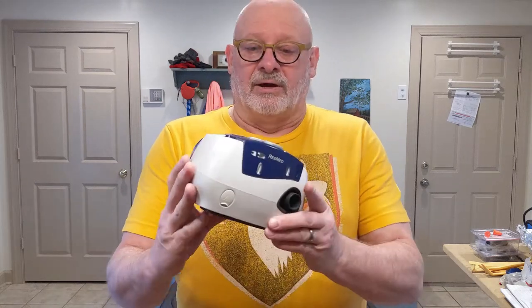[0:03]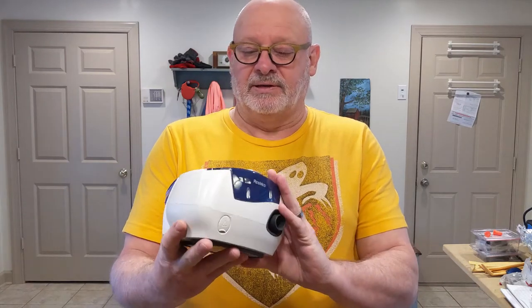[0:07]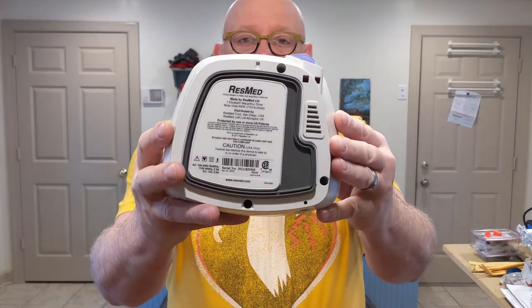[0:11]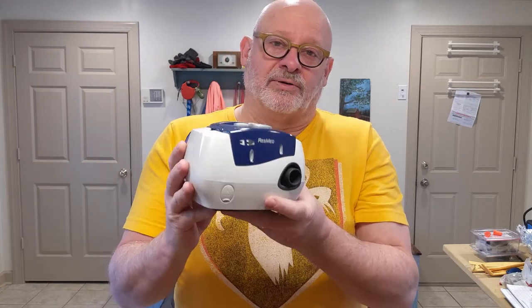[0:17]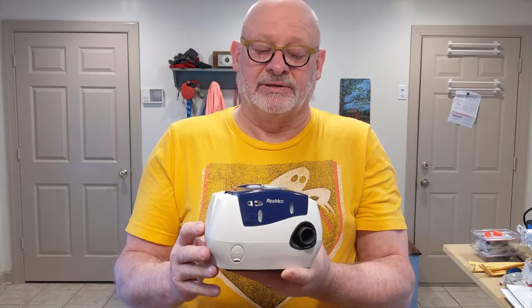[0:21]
Hey, today I'm working on a RESMED CPAP machine. This one is the RESMED ESCAPE 2. And it has a little problem where the power button no longer is responsive. I'm going to go into this thing, and I think I know what's wrong with it. I'm going to show you what I'm going to do to fix it.
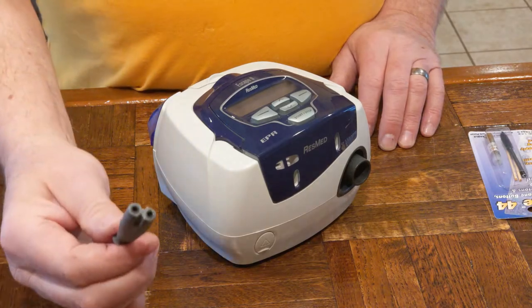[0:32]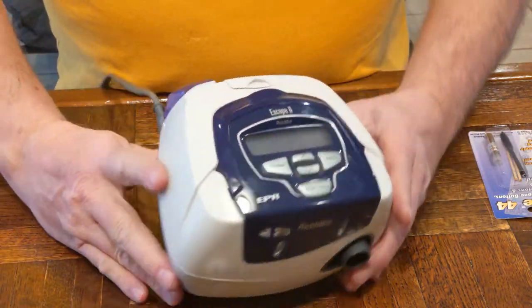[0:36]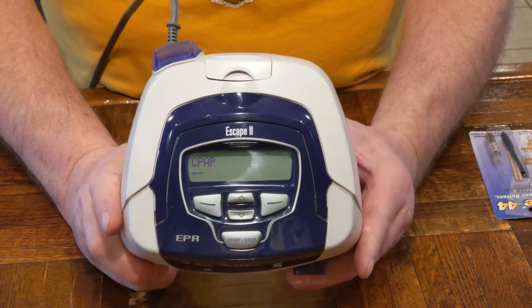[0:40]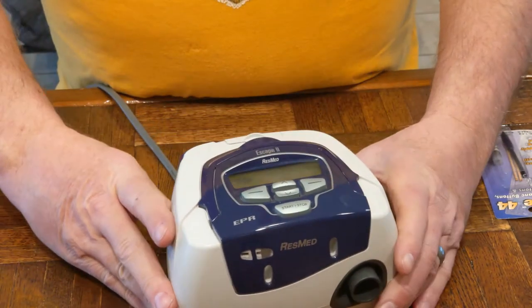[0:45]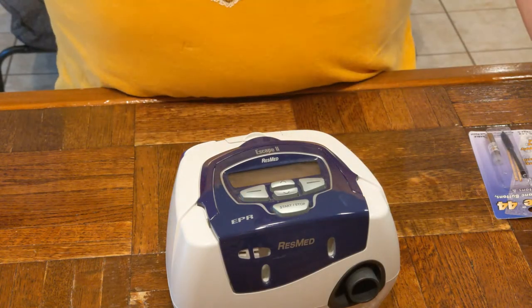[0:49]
It uses membrane switches, and they become contaminated. So on this machine, you can see it's unplugged now. If I plug it in, you'll see it come up and start working in a minute. And it has a whistle I'd like to take care of at some point as well.
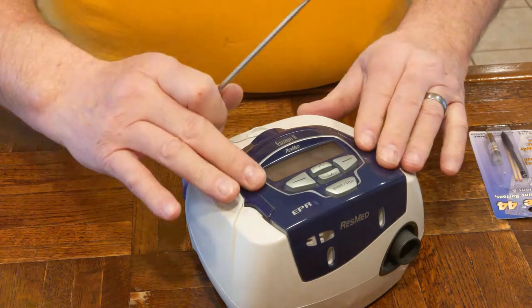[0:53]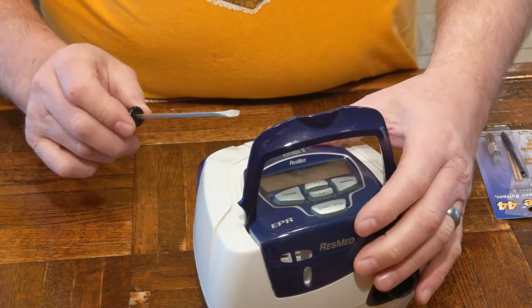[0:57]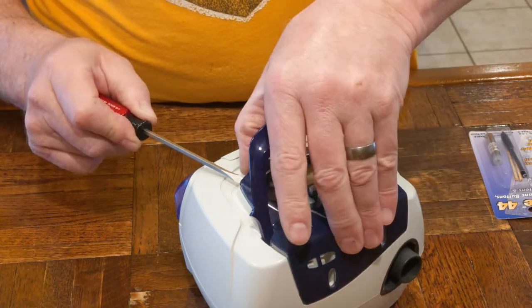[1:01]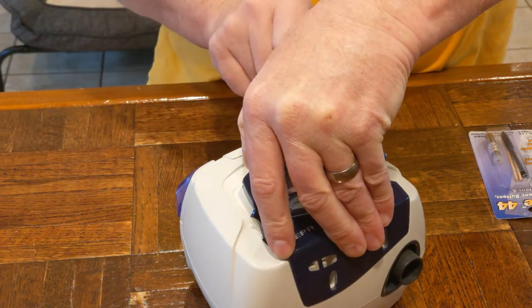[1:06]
So these are the switches here. They're membrane switches. And you basically lift this cover, this little handle here, and this cover just snaps on with the magic of some plastic clips.
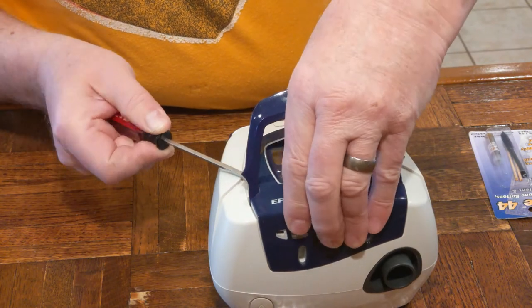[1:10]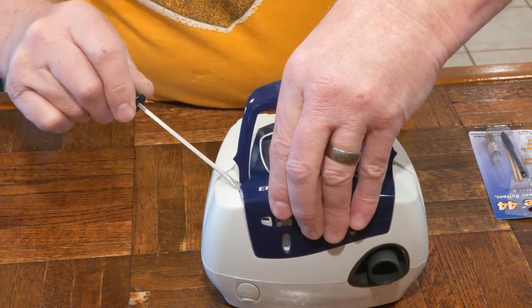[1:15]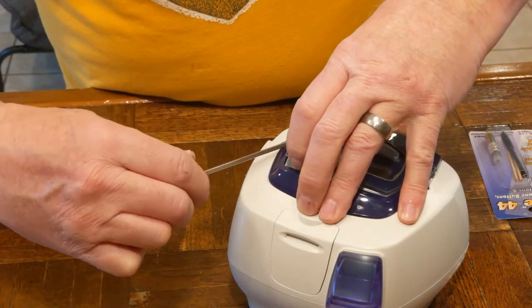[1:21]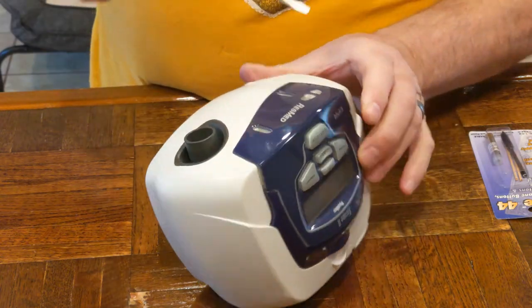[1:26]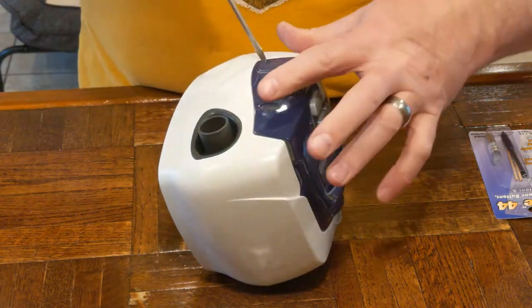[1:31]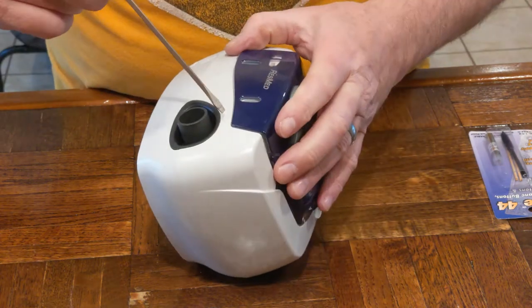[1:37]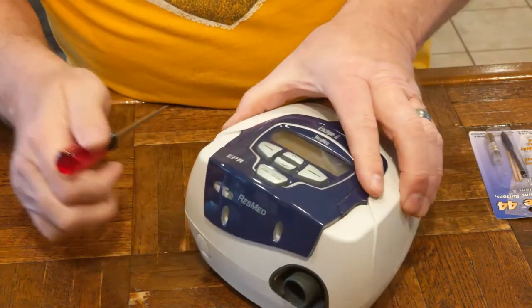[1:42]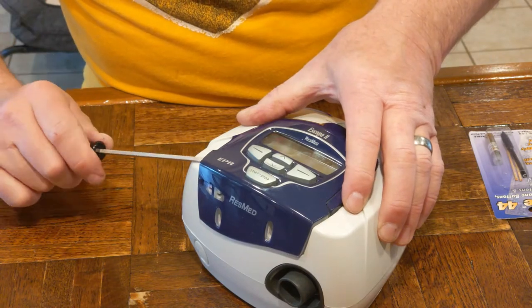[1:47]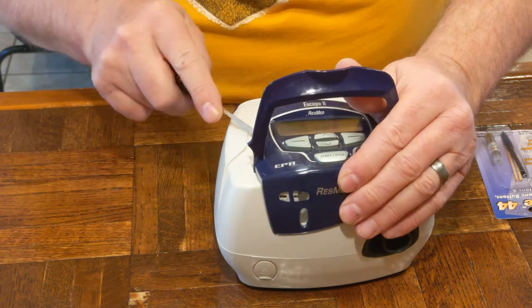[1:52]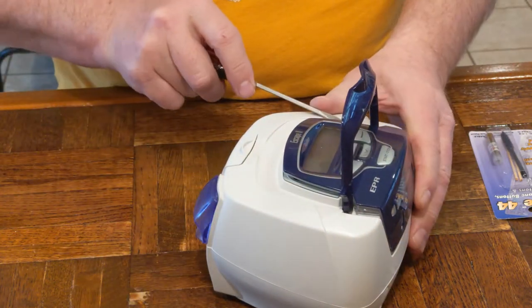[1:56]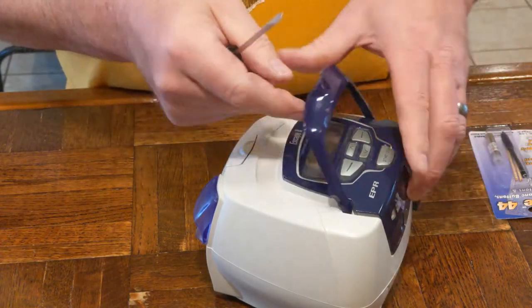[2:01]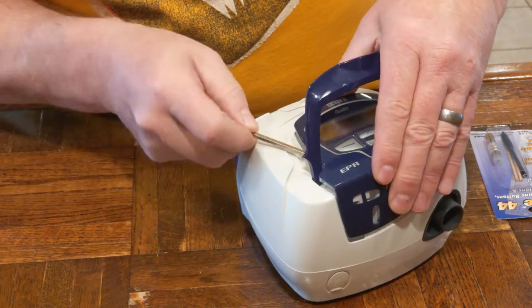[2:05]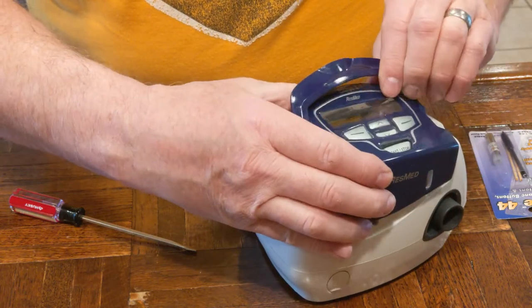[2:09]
I was afraid this thing's gonna break. Plastic clips, yeah. Sounds like it's breaking, but I think she's kind of not for the faint of heart, I guess. There we go.
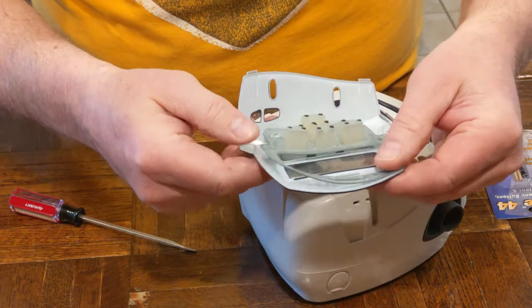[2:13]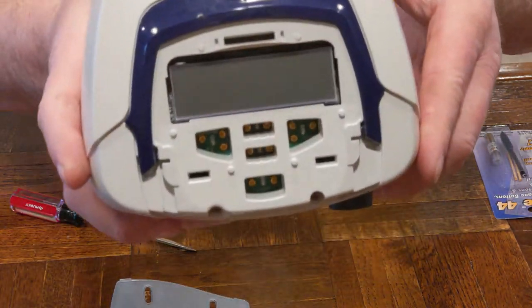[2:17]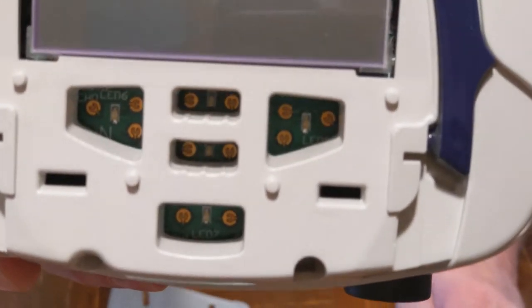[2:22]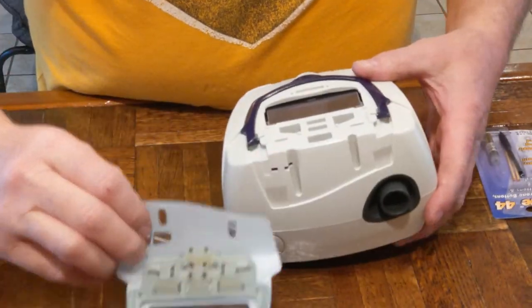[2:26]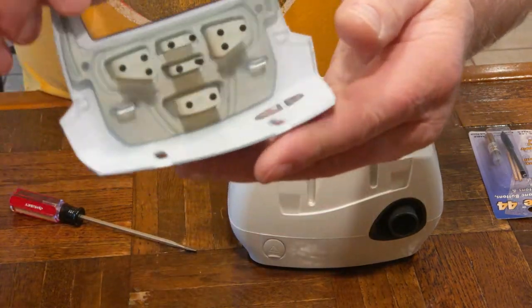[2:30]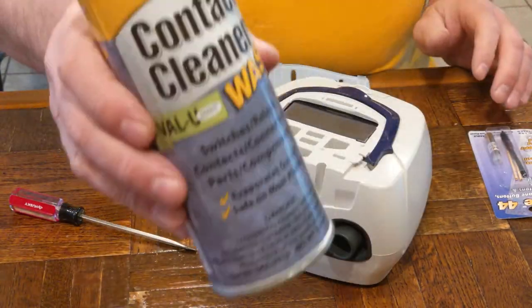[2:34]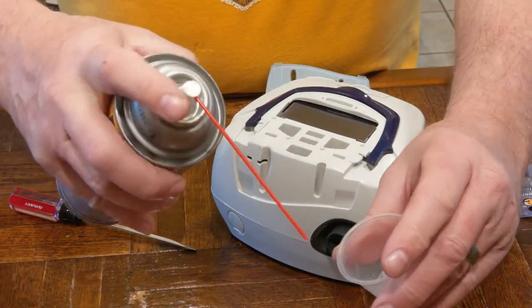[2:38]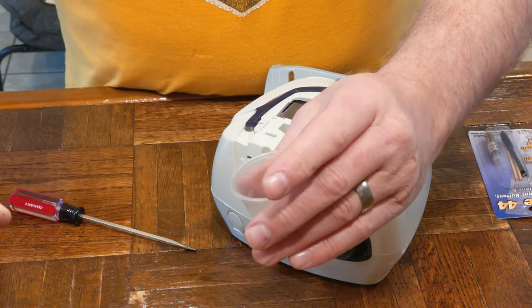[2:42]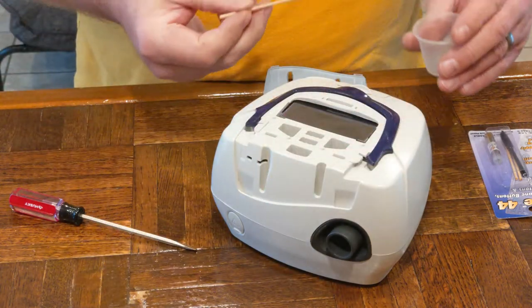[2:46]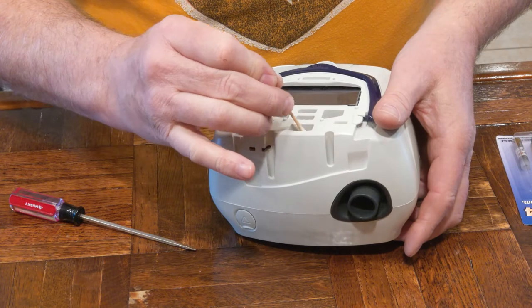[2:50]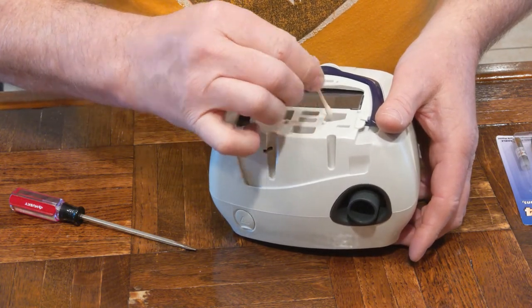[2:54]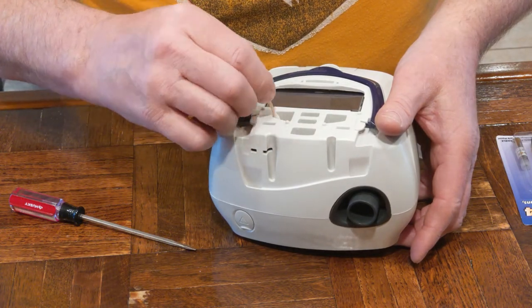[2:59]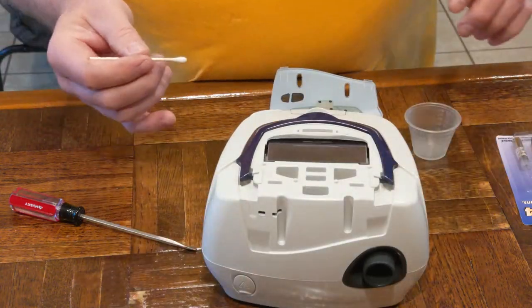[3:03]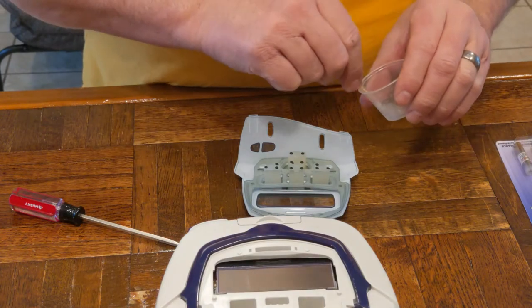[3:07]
So you can see down inside of the connections, little contacts that are bridged with the membrane switches here. So I've got a little contact cleaner. I'm not going to spray it on the equipment, but I'm going to spray it into a little cup here. And then use a cotton swab to clean these contact points. And also to clean the switch contacts.
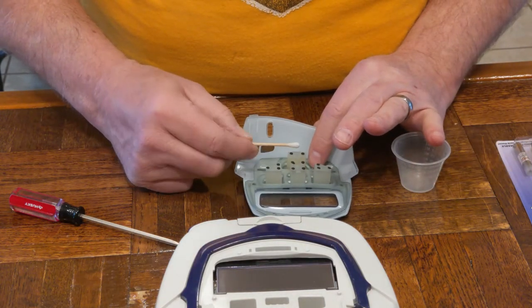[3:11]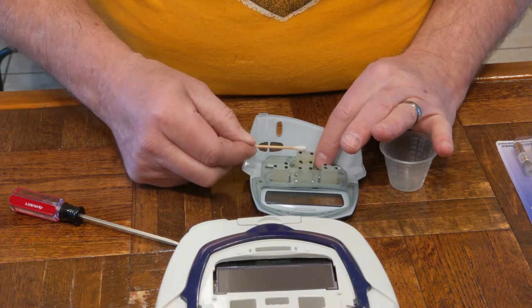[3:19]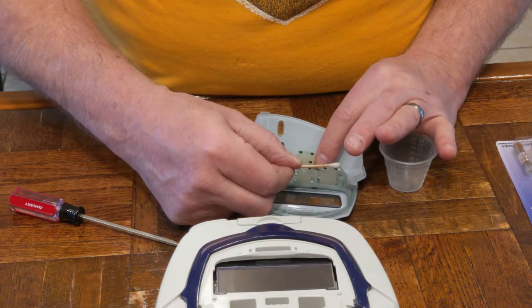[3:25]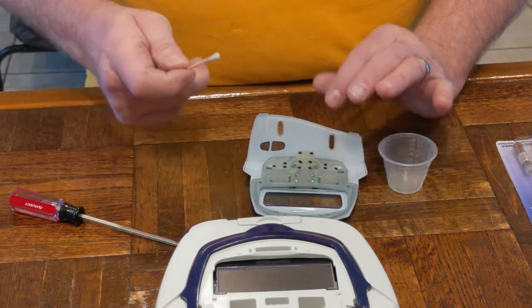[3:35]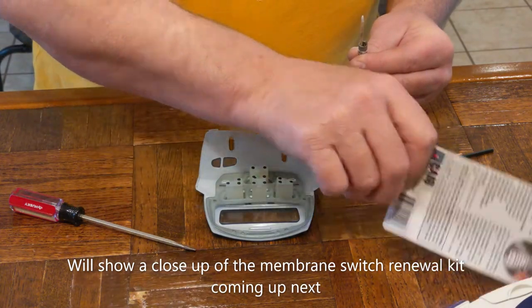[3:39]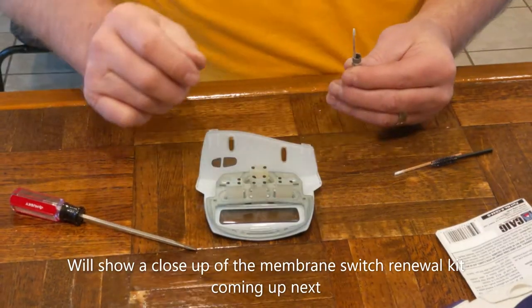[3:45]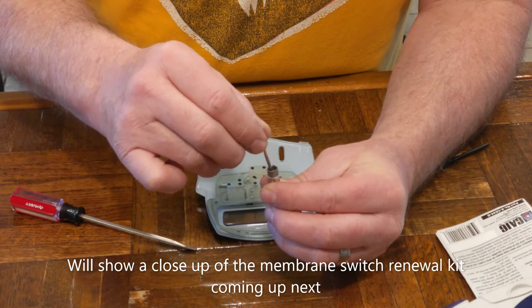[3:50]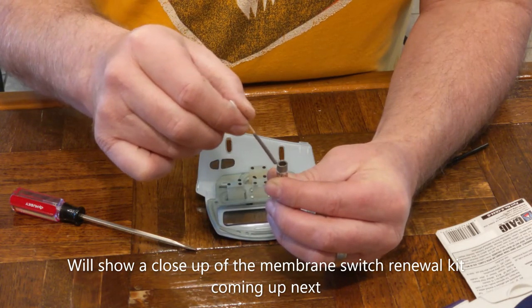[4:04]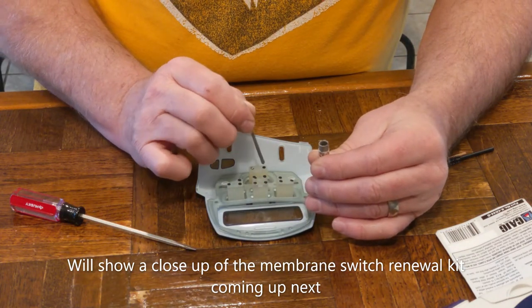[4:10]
So I've cleaned the contacts. Now I'm going to apply this restoration kit here. I've opened the bottle of this conductive adhesive here, and I'm agitating it, stirring it up a little bit. I can tell it has settled to the bottom. And I'm just going to lightly paint it on the contacts here. And let it dry about 20 minutes.
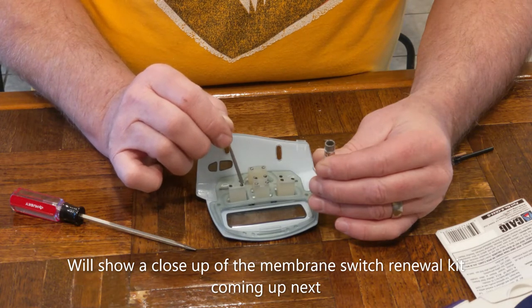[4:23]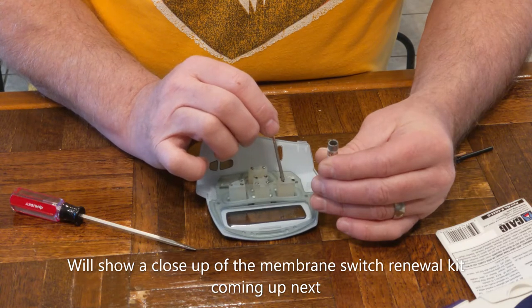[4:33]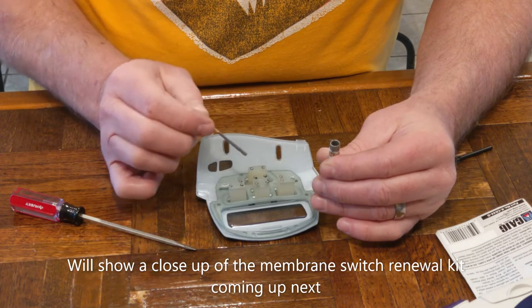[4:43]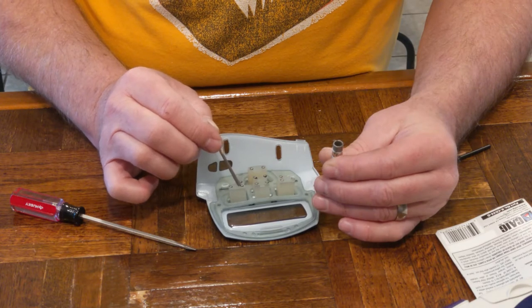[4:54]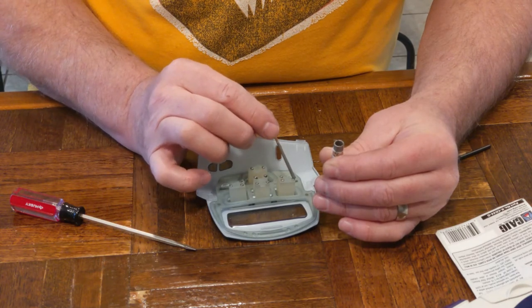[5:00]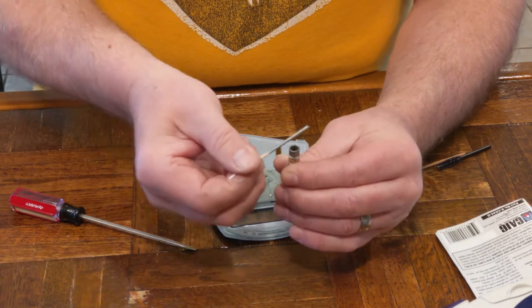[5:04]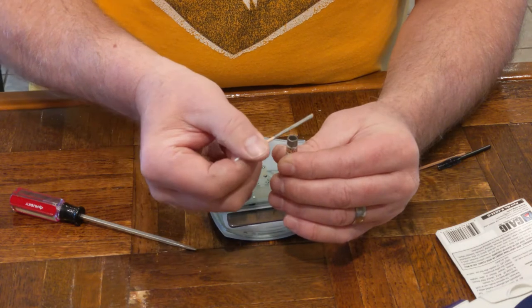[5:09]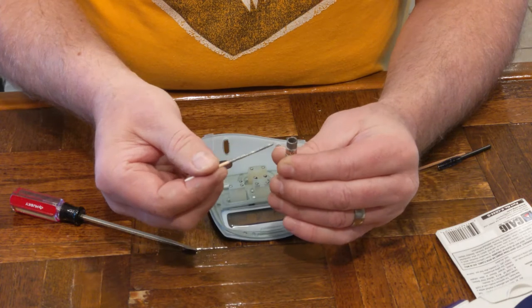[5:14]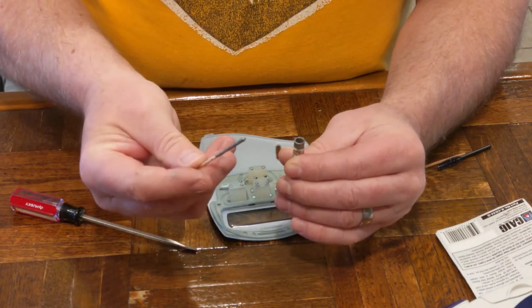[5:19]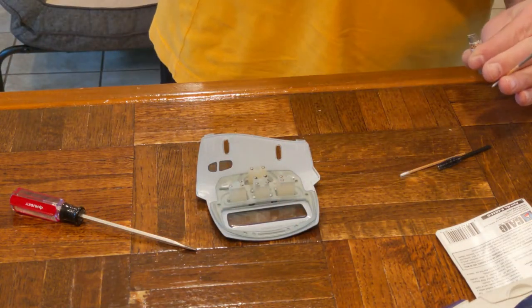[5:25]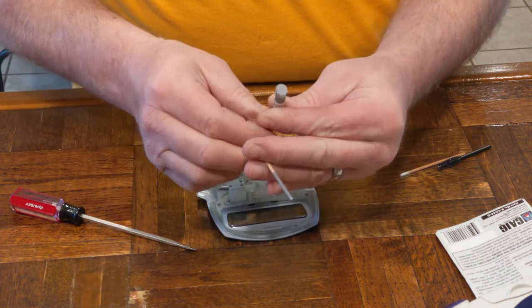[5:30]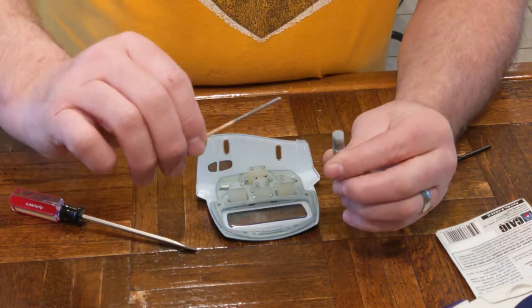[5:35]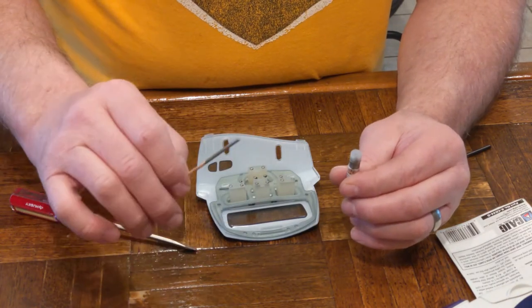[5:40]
Try to save this. I'll run this back into the jar here. And now that I have it on a stick here, I'm going to use a stick to let me know when it's dry. And then I can put the cap back here. So when the material on the stick dries, then I'll know that the material on my contacts have dried as well. And then I can proceed to install it.
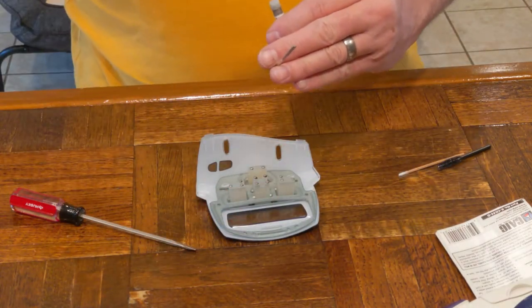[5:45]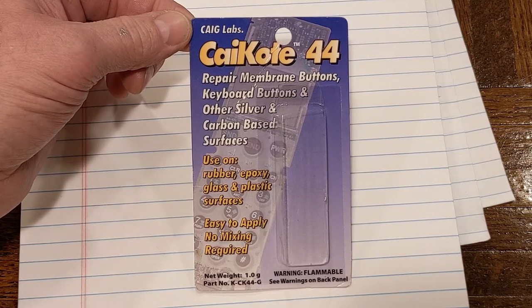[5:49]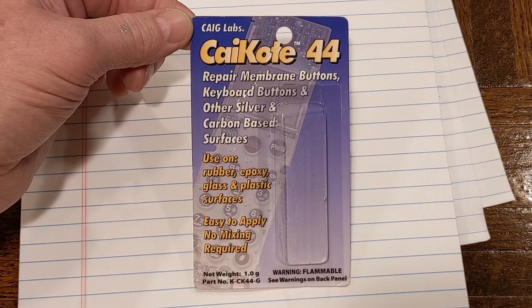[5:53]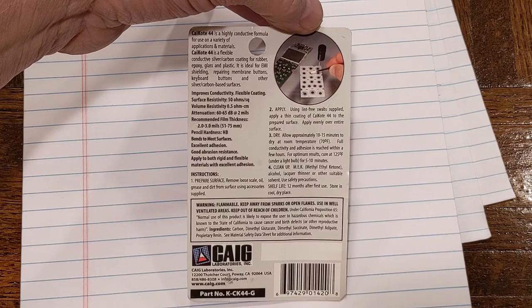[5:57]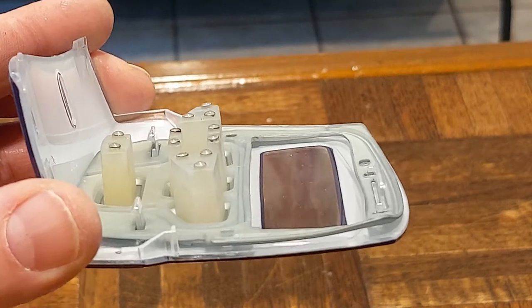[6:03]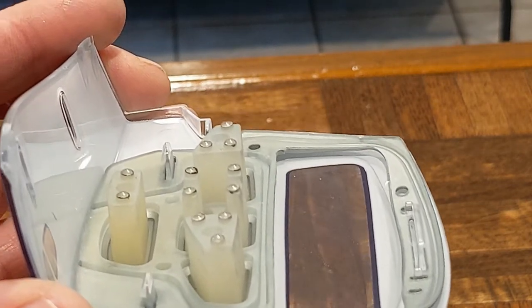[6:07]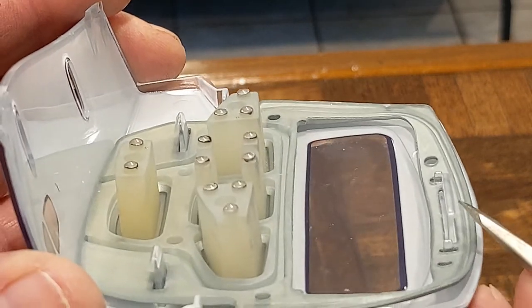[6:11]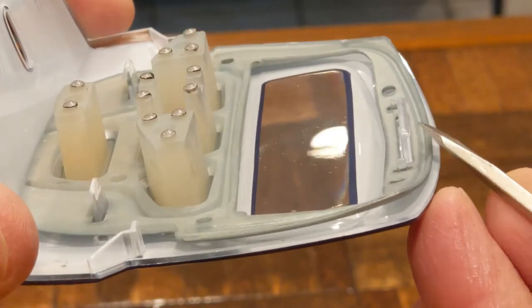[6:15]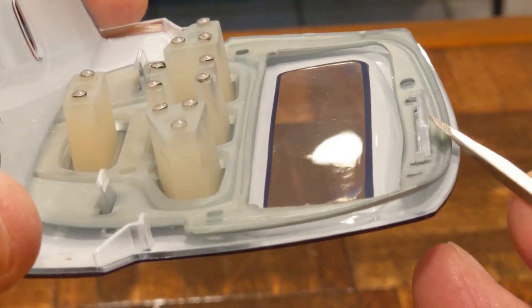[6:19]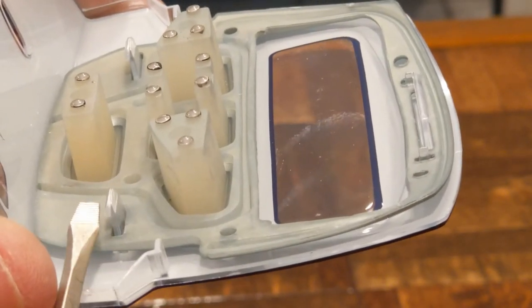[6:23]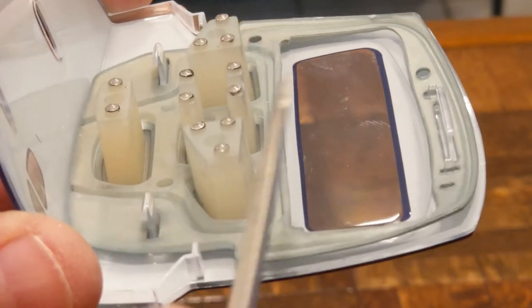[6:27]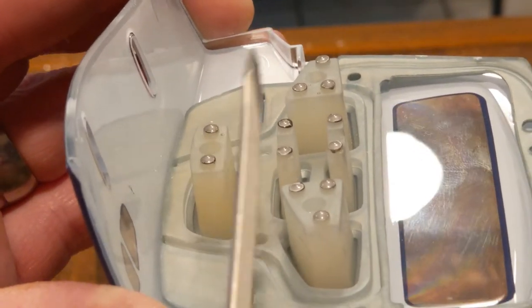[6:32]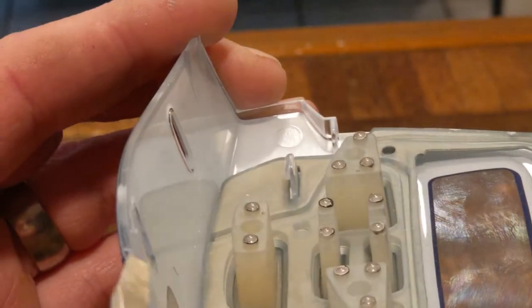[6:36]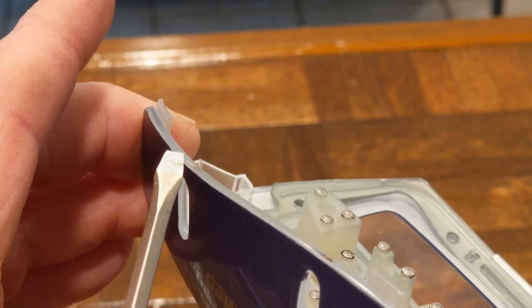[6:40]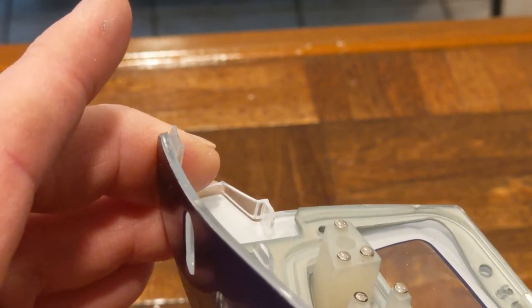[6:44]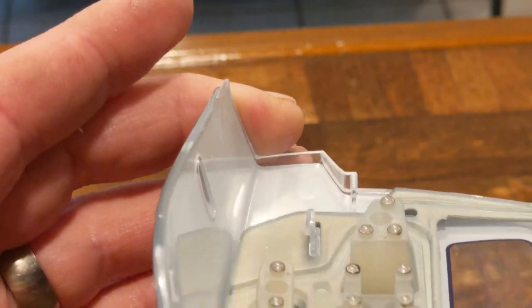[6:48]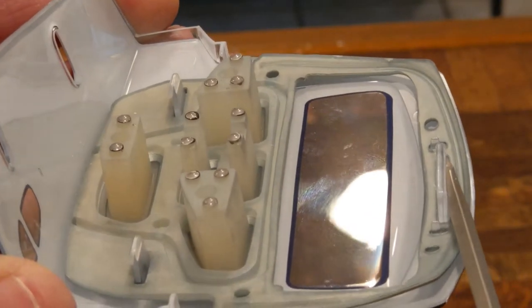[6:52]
So while the switch is drying, I want to take the opportunity to study the clip, how this panel is retained in a unit. And you can see right here there is a ledge on this side of this clip here. And there's a clip back here, and the ledge is on the opposite side here. And then again, there's another clip here. And those are the three things that hold this piece in. And there's also two tabs right here. You can see two tabs that go in and guide it into slots that keep this retained in. But really what holds it in are these three clips. One long one here, and then these two little ones here.
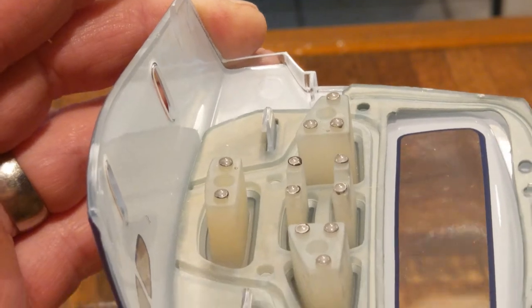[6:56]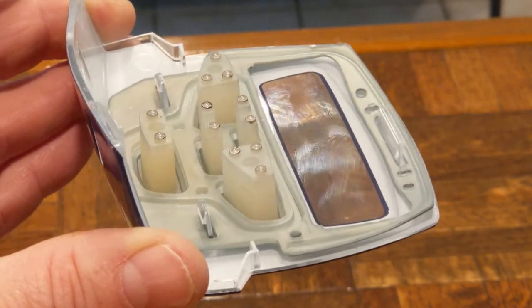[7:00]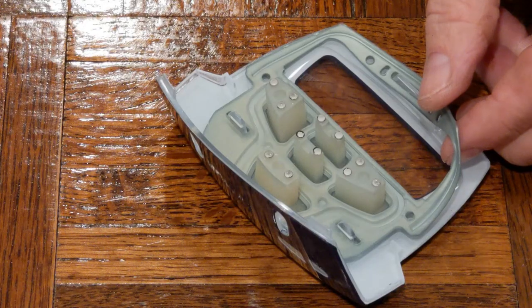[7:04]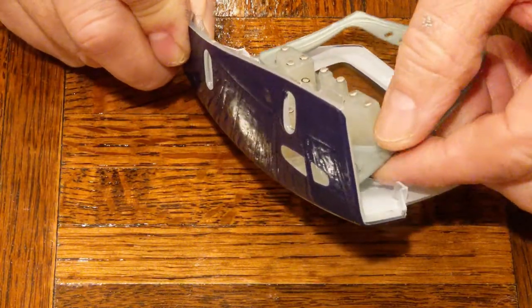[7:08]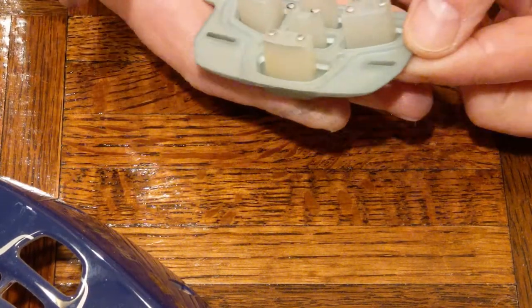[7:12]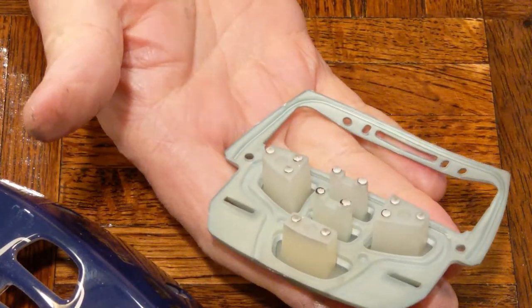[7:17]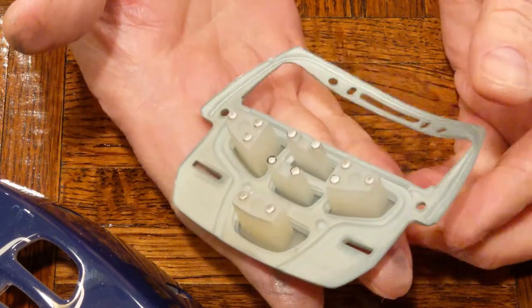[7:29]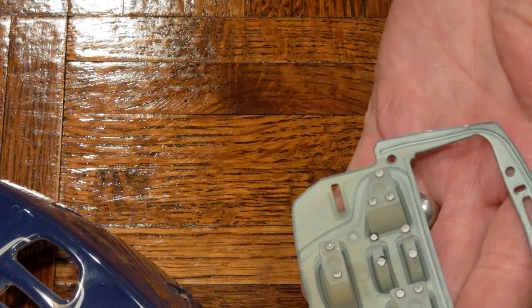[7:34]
So I'm going to remove the rubber membrane from this housing here. And I'm going to put this in the oven to encourage it to dry quicker. And according to the directions, it can dry for 10 to 15 minutes at 125 degrees Fahrenheit. It's kind of cool in here, so it's taking a long time to dry. But I'm going to encourage it to dry quickly by putting it in some heat.
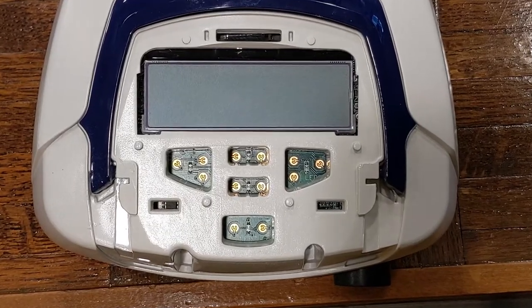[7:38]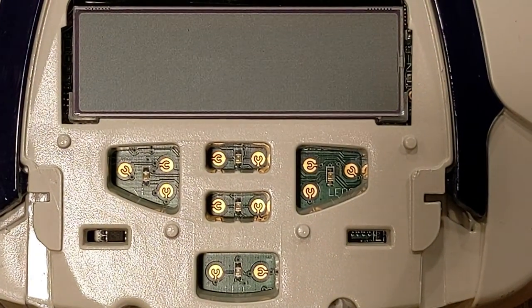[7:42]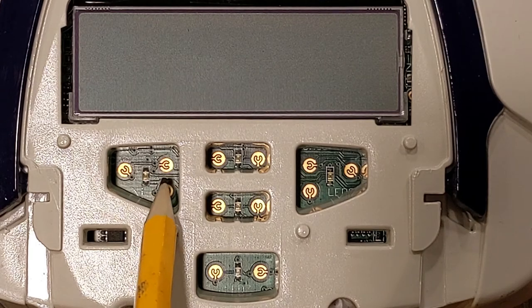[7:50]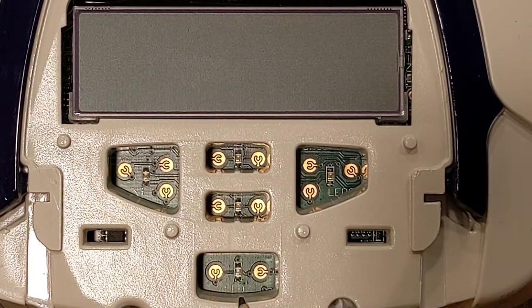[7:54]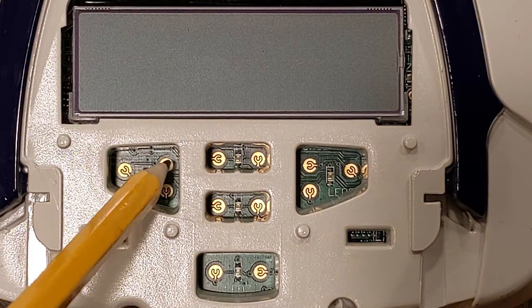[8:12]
I wanted to talk a little bit about these switch pads here that you see down inside. They're actually wired in parallel. And there's three here, two, and two. And what I mean by parallel means the way they're wired, either this array or this array needs to be shunted or shorted to send a signal to start and stop. And in this case, it's just one of the three. Any one of the three will trigger that switch. And in the case of these, either or both will trigger the event. And I'll show you, I'll draw that on a piece of paper and show you what I mean by that.
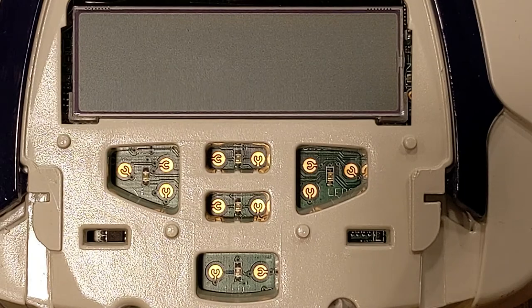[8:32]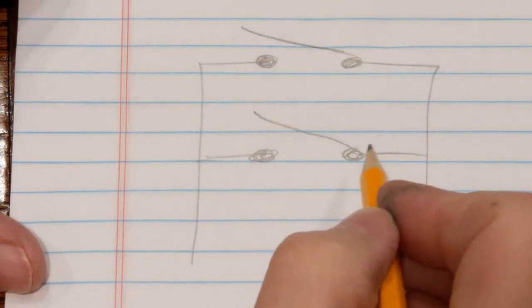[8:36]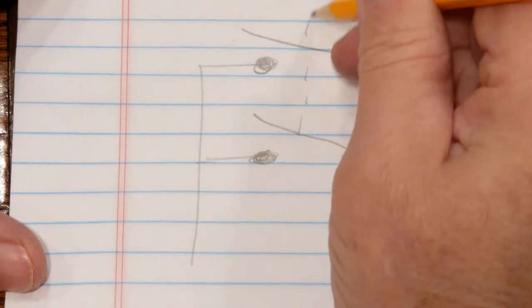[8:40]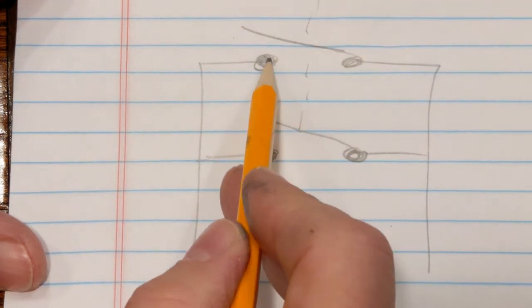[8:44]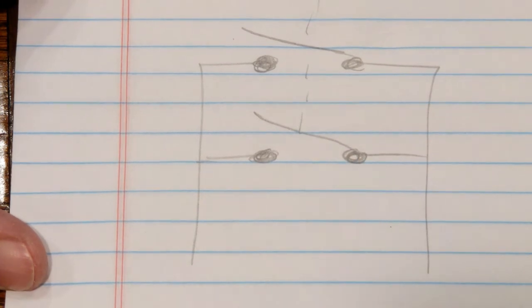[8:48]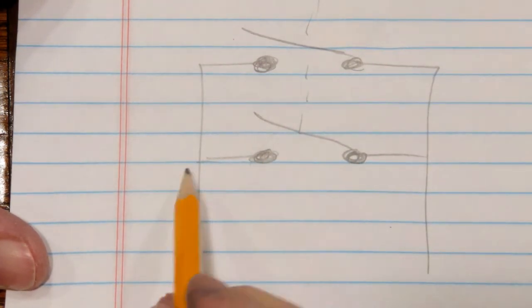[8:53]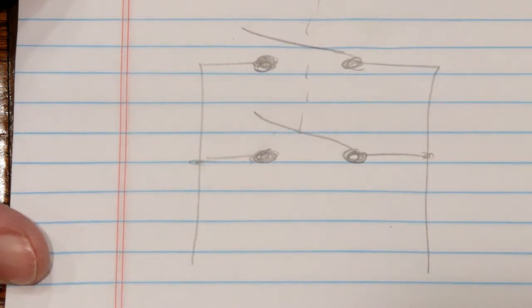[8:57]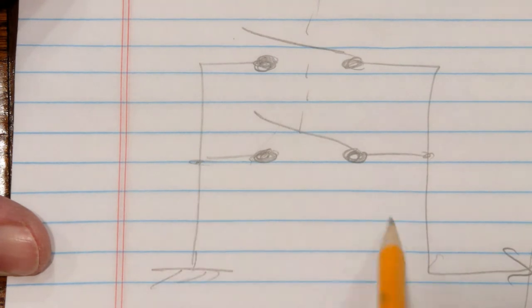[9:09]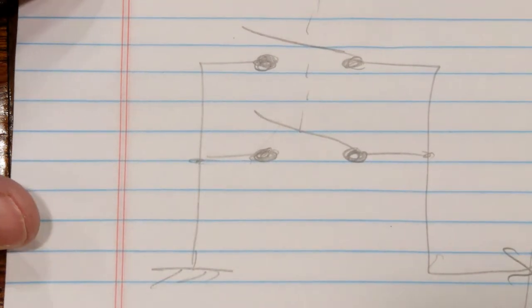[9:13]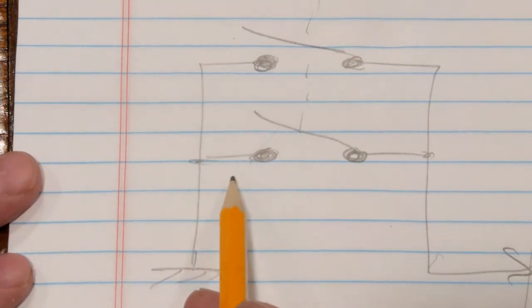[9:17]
And so here's the case of two switches. When you press the button, whichever one, the way the membrane is, one or the other or both may come in contact and make the connection, but it doesn't have to be both. It can be just one of them is all it needs to send the signal. So normally like one side here would be ground and the other side would go into some kind of input to a chip. And so you basically send in a low level input to trigger the on-off condition in this case. So that's what I mean by when the switches are wired in parallel.
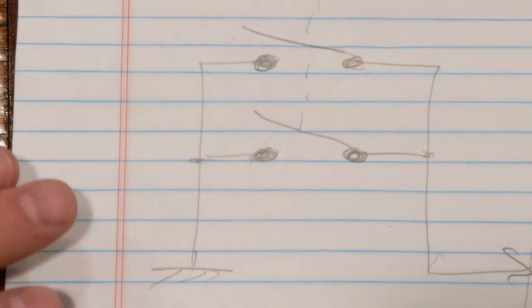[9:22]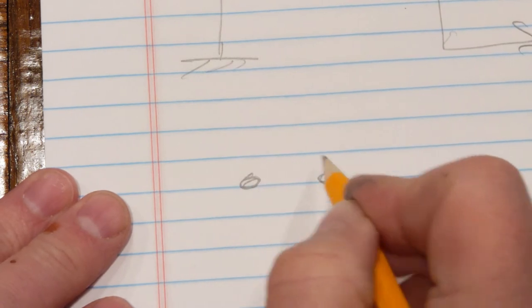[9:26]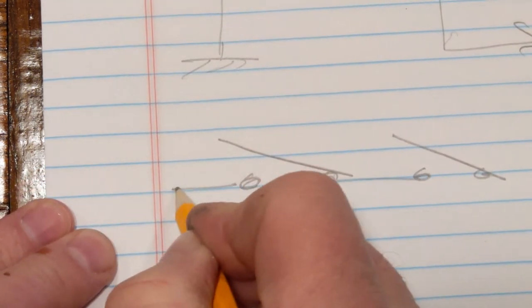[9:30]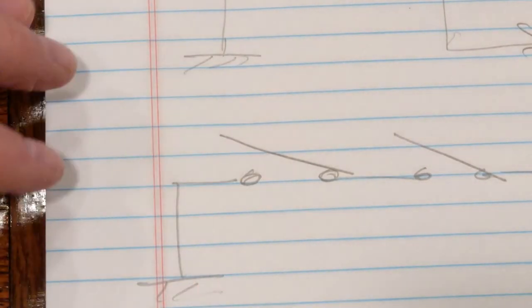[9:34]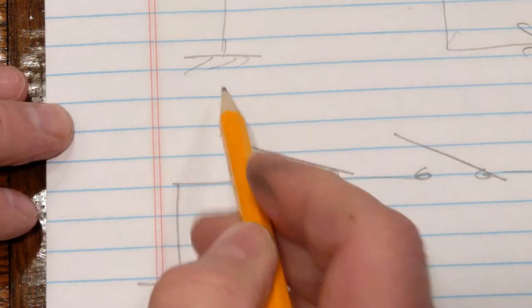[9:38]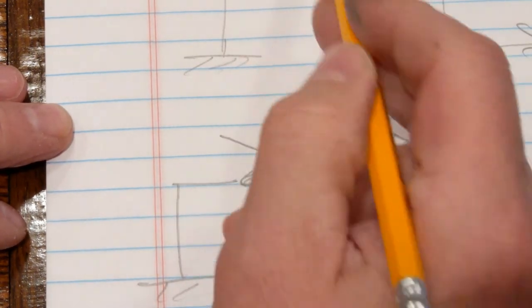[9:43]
If they were wired in series, it would be more like this, where both switches would have to be engaged to get a signal out. The electrons would have to come through here and through there. But in this case, the electrons are coming up and they're going through either or switch to make the connection up here.
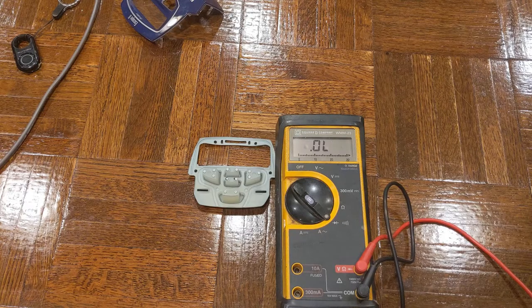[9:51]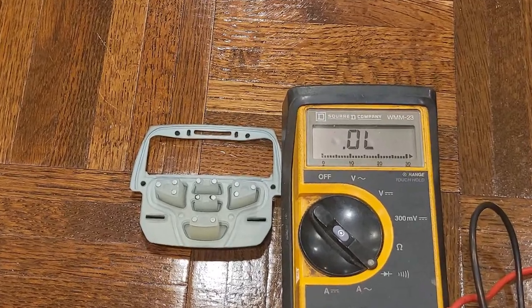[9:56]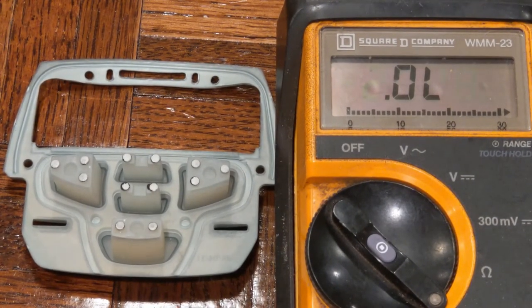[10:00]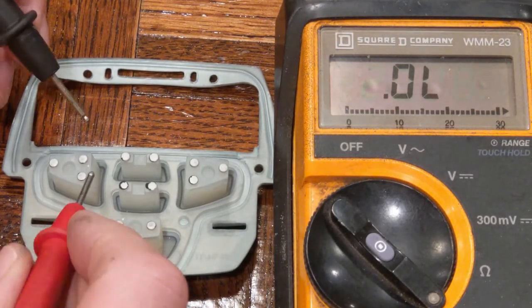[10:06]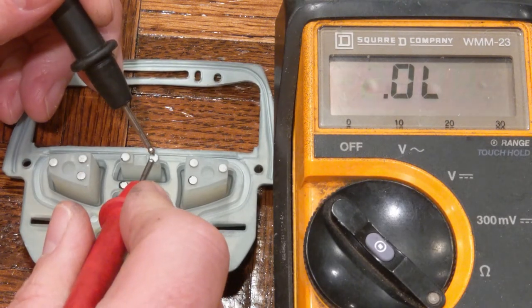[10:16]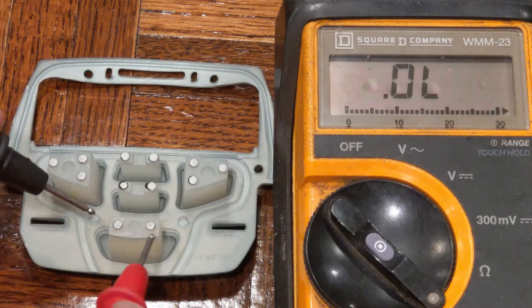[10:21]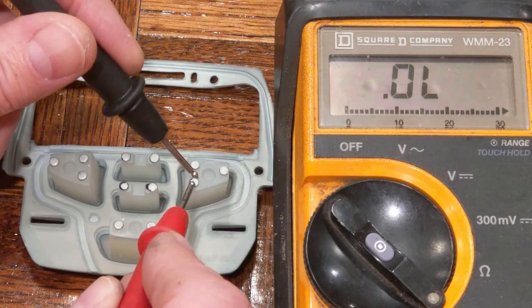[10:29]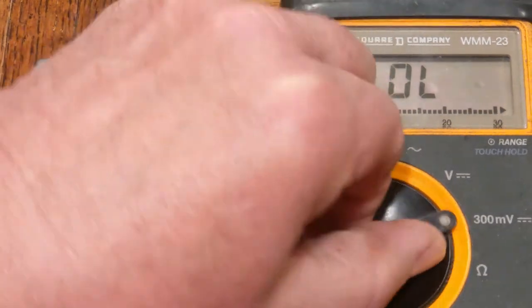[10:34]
So the conductive repair has had a chance to dry, so I'm just going to test these out with a voltmeter here. You can see they're highly conductive now. And that's one problem with these, the buttons. There's just a very small amount of contact surface. A large button, but when you really look at it, it's not much contact surface. And so these look good. I'm going to go ahead and assemble the CPAP machine now.
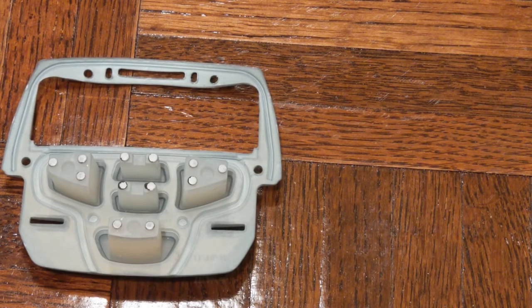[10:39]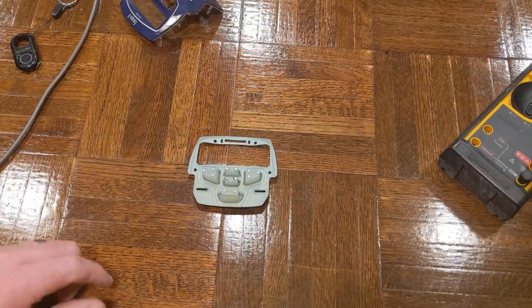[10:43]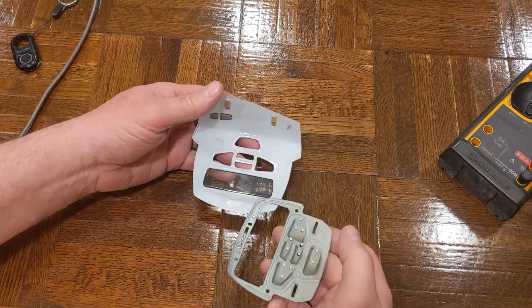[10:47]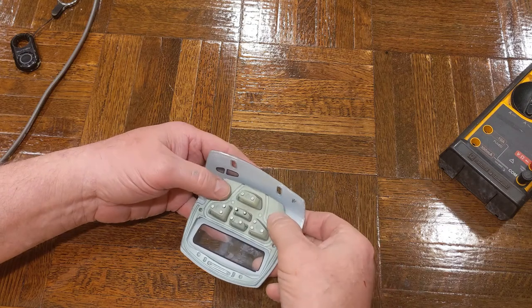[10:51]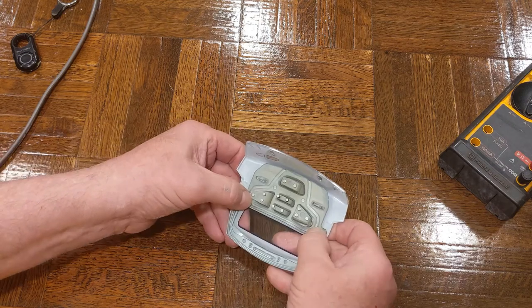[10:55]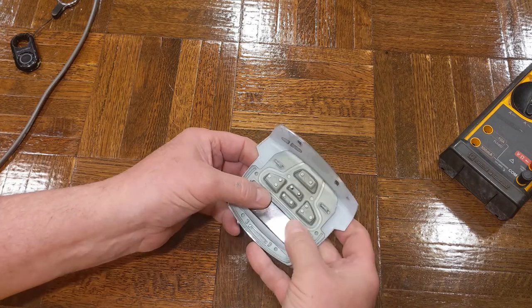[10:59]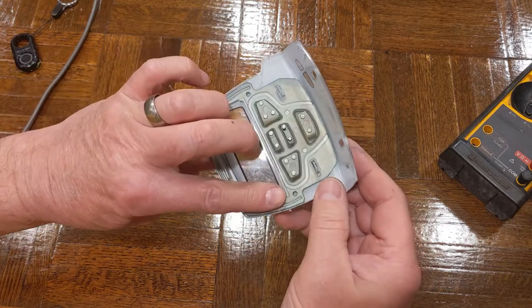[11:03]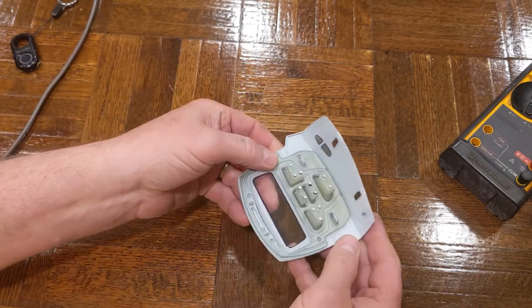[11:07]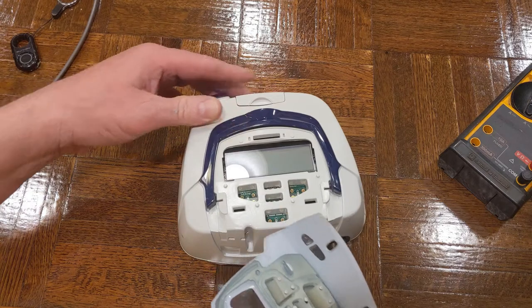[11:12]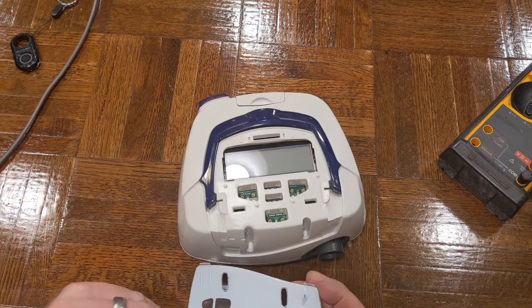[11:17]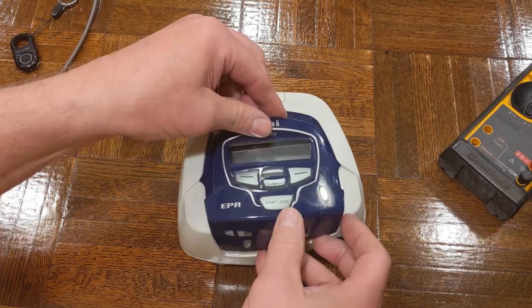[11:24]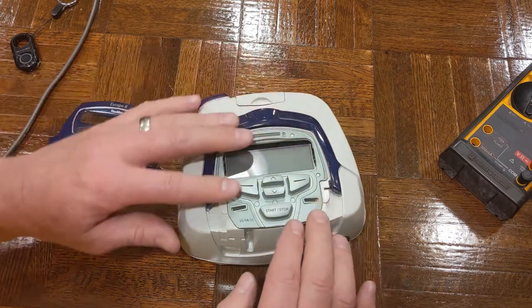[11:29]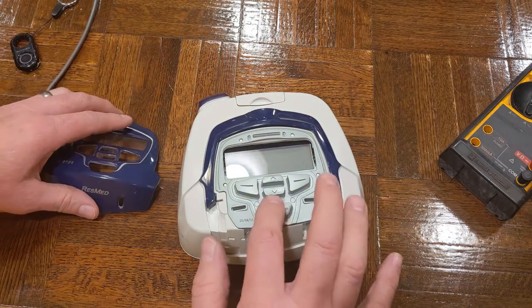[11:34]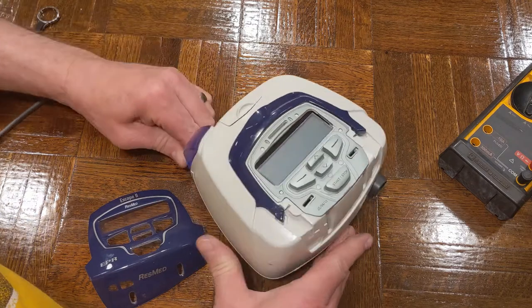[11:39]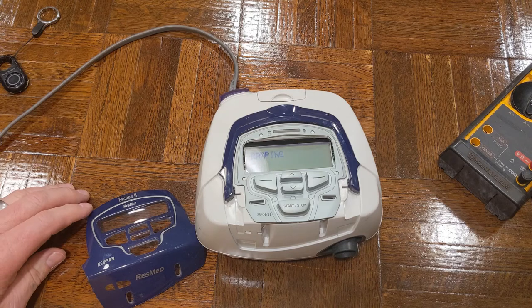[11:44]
Then it's going to snap into this. There's the long tab there. These tabs here are tucked down inside there. Actually, I think I'm going to try putting it in there like that. And I can just test it here. I can plug it in. And it should power up in a second.
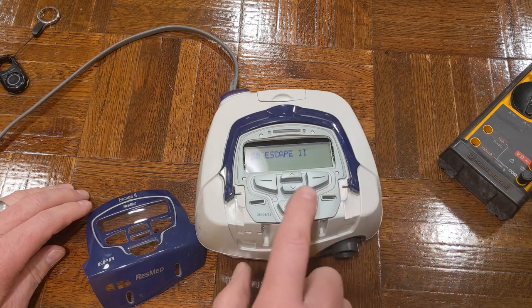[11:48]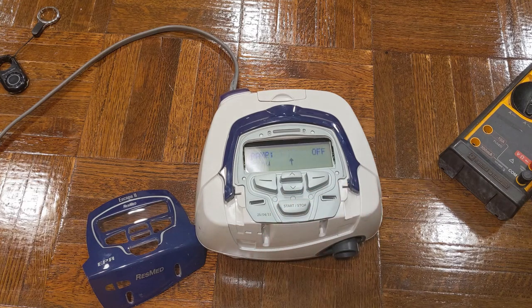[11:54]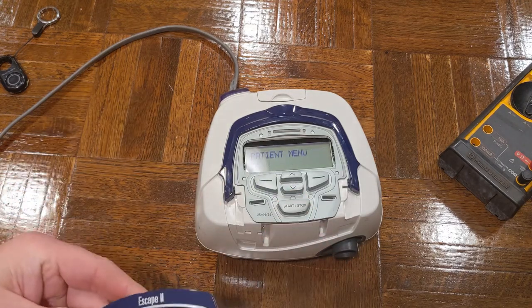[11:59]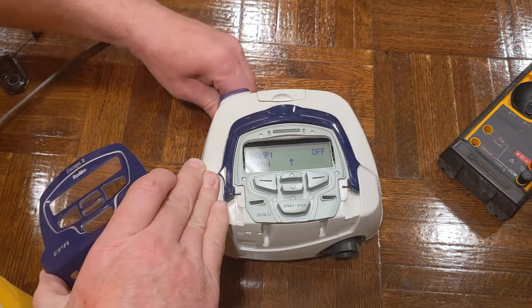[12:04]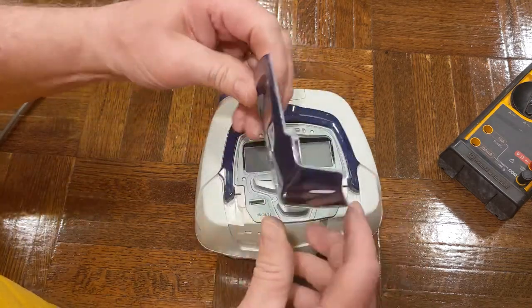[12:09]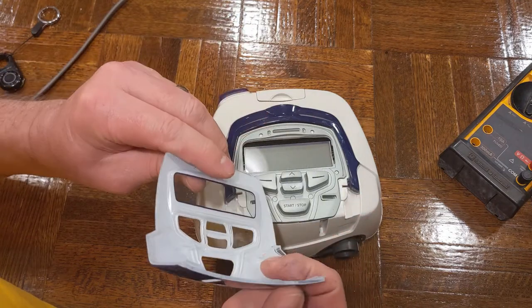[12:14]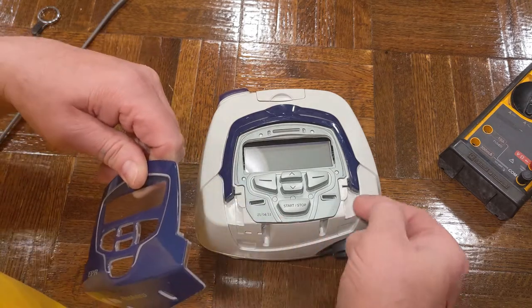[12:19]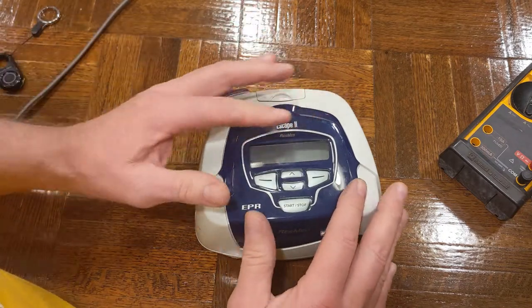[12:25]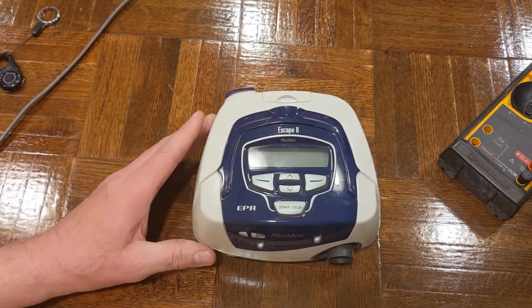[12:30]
So it works great now. I'm tempted to leave this off, but I'll go ahead and snap it back in place. But the switches are working great now. Just need to put this back into position. And so the next time I go to unsnap it, I'll see there's a snap back in the back, and then there's one on each side here that you just pop up on each side, it appears. And there it is, it's ready to go.